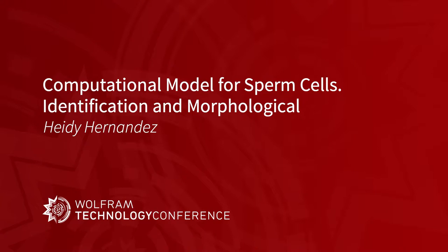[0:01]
But what I'm presenting here today is part of a project I've developed outside of work in my university back in Peru. They are actually building a computerized tool to assess male fertility based on analyzing videos and images from sperm samples. So what I did in the early stages of the project was a brief research and, using Mathematica, develop a model to analyze the morphology of the sperm cell head specifically, as a partial result on the evaluation of the cell. So this is what I'm going to show you today.
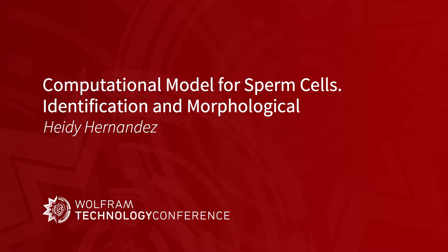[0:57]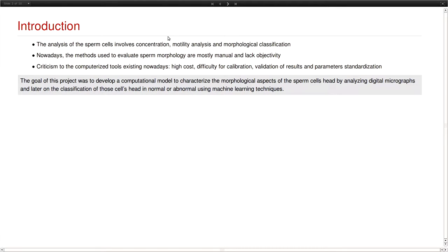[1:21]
First of all, the analysis of the sperm cells involves concentration, motility analysis, and morphological classification. There is also a macroscopic analysis that's made to the samples, but in terms of the microscopic analysis, this is what is usually done. Nowadays, the methods used to evaluate sperm morphology are mostly manual and lack objectivity. And for the computerized tools that do exist, there is criticism about the high cost they have. They are difficult to calibrate. Mostly, they are hard to use in a lot of cases.
So the goal of this project in particular was to develop a computational model to characterize the morphological aspects of the sperm cells, extract features, and classify these cells' heads as normal or abnormal using a machine learning algorithm.
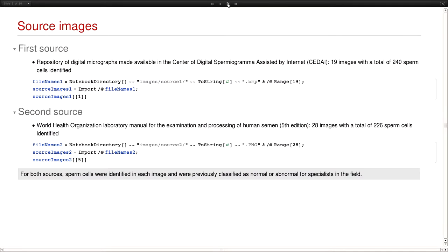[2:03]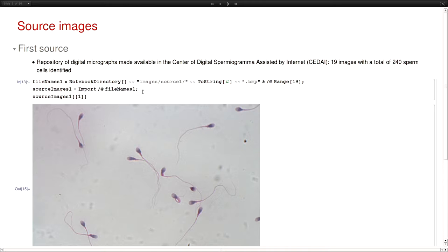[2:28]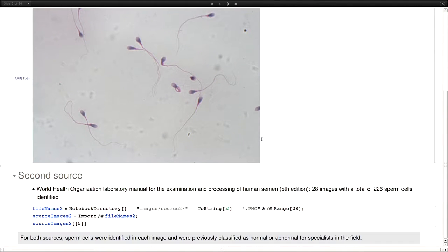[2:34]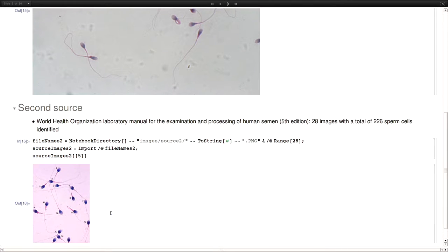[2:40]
I use two sources. The first of those was made available by the Center of Digital Spermiogram assisted by internet, which is an organization from Chile. I am not including the images in the presentation, but I do have some notes at the end in the references, so if you are interested in knowing more about this, you can find the images there. This is an example of the images we get from the first source. And the second source was the World Health Organization laboratory manual. We get these other images.
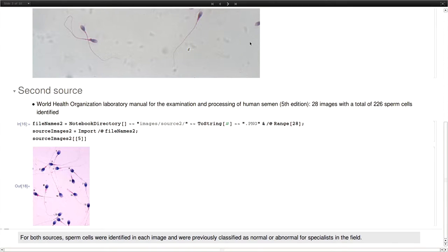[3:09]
We needed to use two sources because the first one didn't contain enough cells. And also, the cells were mostly abnormal, and that doesn't work if you want to build a machine learning model. You need a representation for both of the classes, normal and abnormal cells. That was the reason we had to use a second source. For both sources, we had the images, and we also had a classification made by the specialists on whether the cells were normal or not, so we could train the machine learning algorithm.
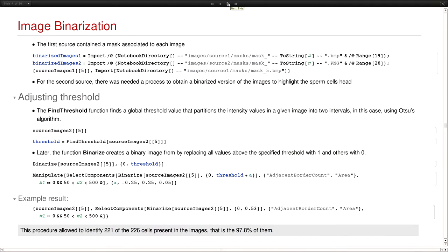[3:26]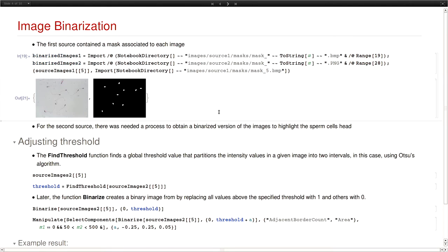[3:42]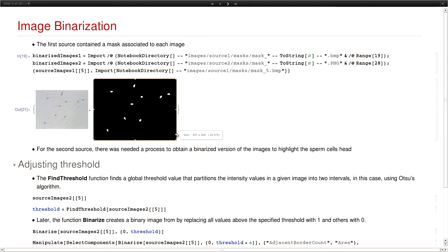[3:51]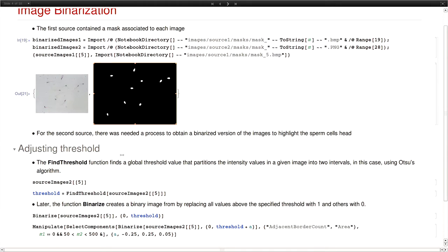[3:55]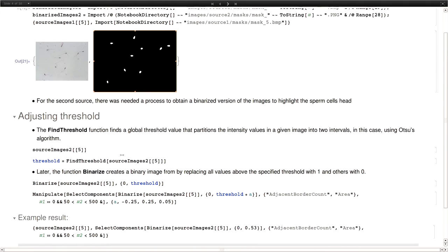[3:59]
We needed binarized images for these original images so we could analyze the components, in this case, the sperm cell's head. In the case of the first group of images, we had those binarized masks for each of the images. So in that case, we were good. But for the second source, we didn't have those. So we had to do one extra processing step to obtain the binarized mask.
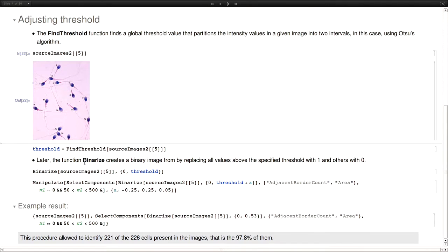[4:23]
Mathematica had tools to do that. The thing is that they don't work directly for all of the cases. You need to do some calibration on the parameters. In this case, for example, this is an example image from the second source. And the Binarize function from Mathematica, which is what we use, transforms the image to grayscale and then applies some algorithm, which by default is the Otsu algorithm, to separate the foreground and the background of the image and return a binary image which only contains black and white pixels.
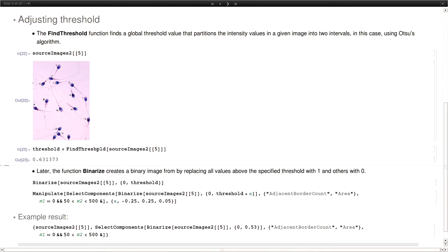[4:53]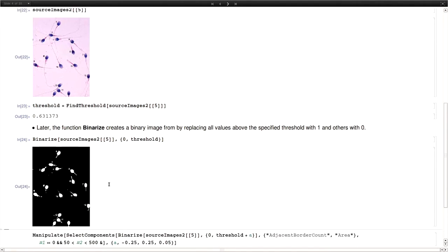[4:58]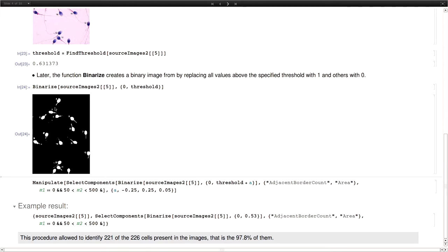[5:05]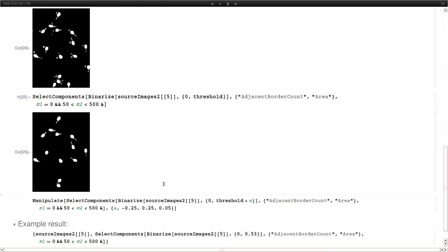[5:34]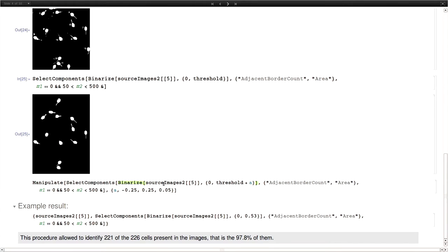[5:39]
Internally, the Binarize function has to find a threshold value, but we found out that the value it finds by default makes the result something like this, which is not what we wanted, because there is a lot of information that is not what we need. So the first thing could be to select the components with the SelectComponents tool, in this case filtering by area. So we just use the components that have a size that we know we are looking for, and we get rid of some white points, but that is not enough again. So what we did was try to find an adequate value for the threshold. We didn't begin from zero. We looked around the threshold value that Mathematica returns, in the neighborhood of that value.
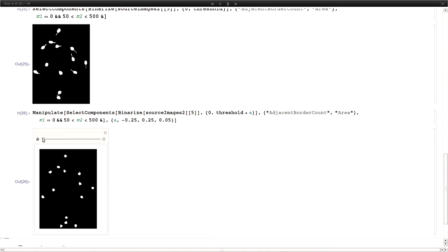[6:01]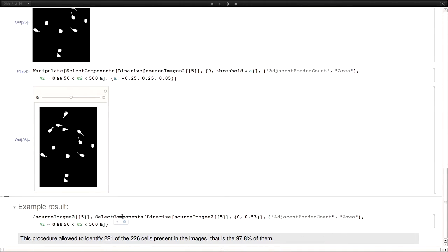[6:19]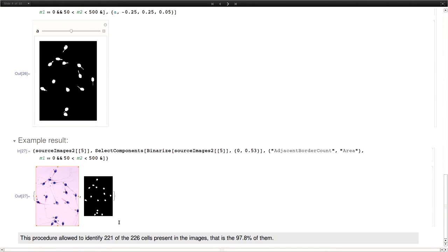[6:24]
So here is an example of what happens if we use a small value of the threshold. We lose information on the cell's head, and if we use a larger value, then we are including information that is not wanted. So the key here was to find an adequate threshold value. This is an example of one of the results obtained. The images are not big. With this procedure, we were able to identify almost 98% of the cells in the second source, which for the purposes of the research was a good result.
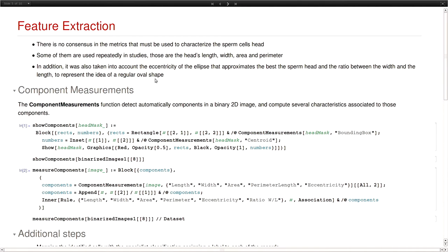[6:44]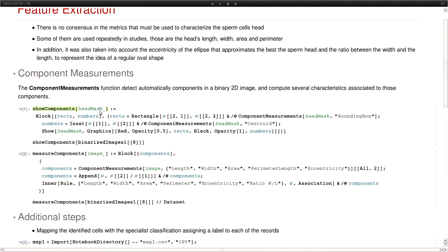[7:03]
The next step is to extract the features. Mathematica has the ComponentMeasurements function, which works with binary images and measures features from the components in the image. In this case, for the binary image we have, I'm just showing what Mathematica does. I mean, it doesn't do that directly. I just drew the bounding box to see that it's actually identifying the head cells in a really good way, which is what we want.
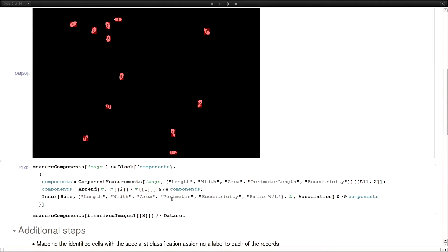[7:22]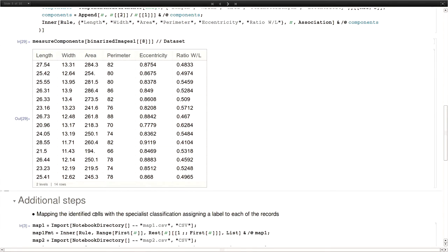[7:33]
And then once we are sure that we are actually identifying what we want, we can measure those components, and I'm showing it in the data set. In this case, we are using length, width, area, perimeter, eccentricity, and ratio. Something that I didn't mention before is that there is no consensus about what features must be used to characterize the sperm cell head. So what we did is we used some of the ones that are most mentioned and that have obtained good results, and we also added the eccentricity and the ratio just to give the idea that the sperm cell head must have a round, regular, oval shape.
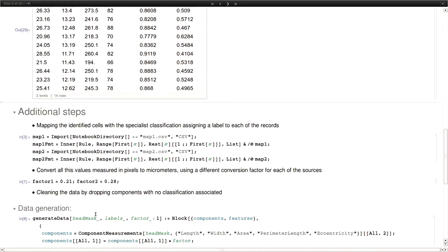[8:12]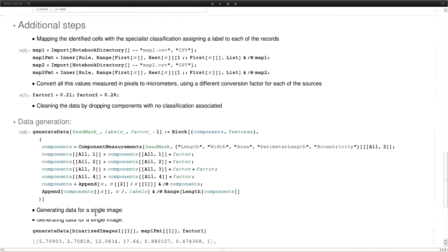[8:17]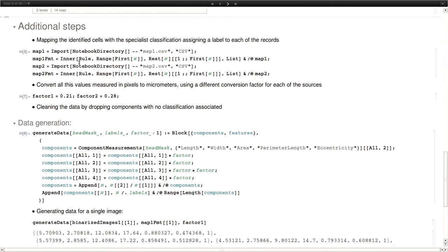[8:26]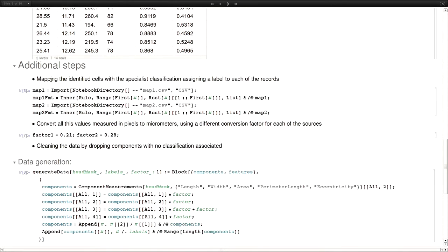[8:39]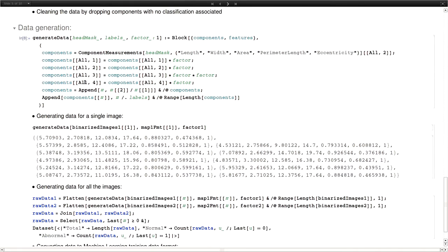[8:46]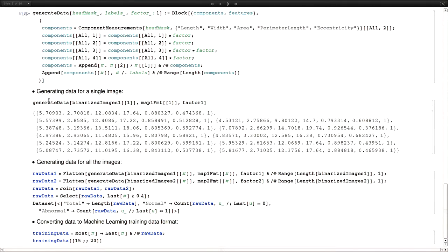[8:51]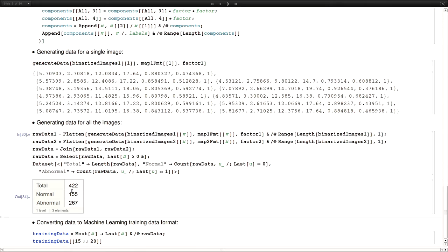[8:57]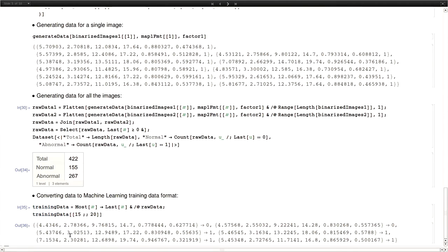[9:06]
There are some additional steps here. First of all, we need to add a label to each of the entities, in this case the sperm cell head. We needed to add the classification given by the specialists, whether the cell was normal or not, so we could train the classifier. We also needed to convert the pixel measurements to micrometers, and for that purpose we use a factor for each of the sources, given in the documentation of the sources. By doing that, we could generate the data for all the images and all the cells, and at the end we get a total of 422 cells, 155 normal and 267 abnormal. So we converted that to the machine learning format for Mathematica, which is the features pointing to the value of the class. In this case, 0 for normal cells, 1 for abnormal cells.
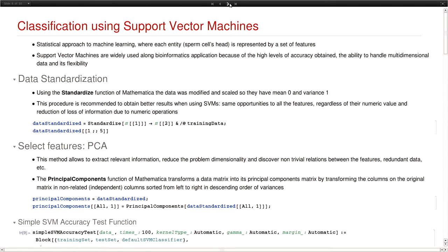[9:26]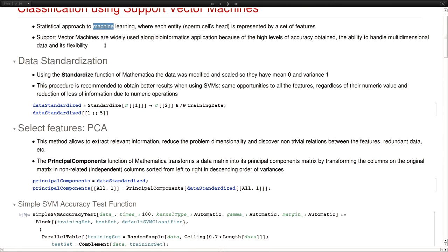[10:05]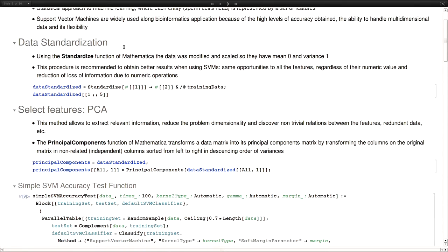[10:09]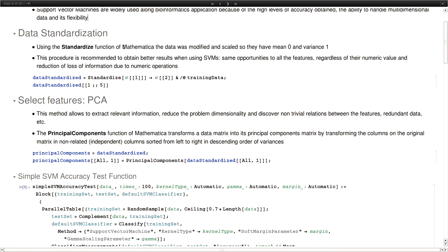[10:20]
Now going to the classification step. Here we use support vector machines. For those who are not familiar with the algorithm, I'm not going to go deep on that. Just to mention that it is a statistical approach to machine learning, because what we do here is that we have a set of features to characterize the entities, in this case the sperm cell head, and then we have an algorithm that builds a machine learning model based on those features. Support vector machines are widely used in bioinformatic applications because they have high levels of accuracy in applications similar to the one we were handling in this project. They also have a good ability to handle multidimensional data and so on.
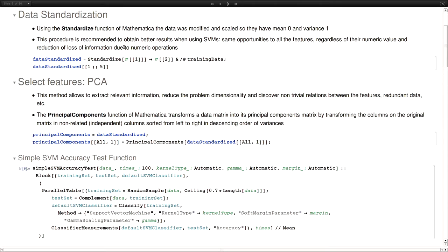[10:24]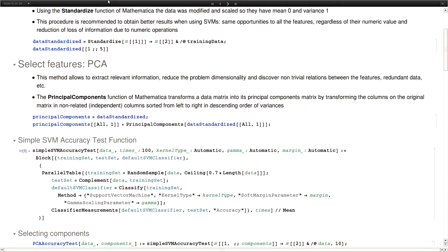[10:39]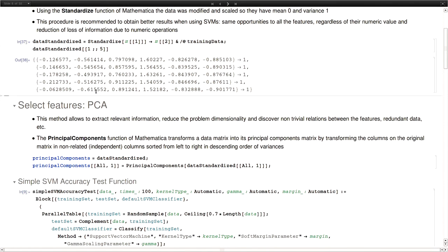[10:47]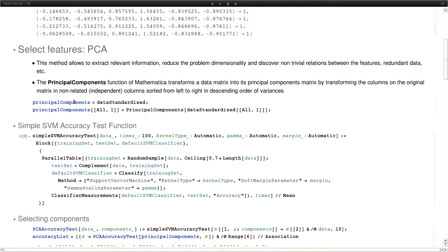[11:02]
We did a previous step before training the classifier, which was the standardization of data using the Standardize function from Mathematica. So we give the same opportunities to all the features, regardless of the numeric value. That also reduces the loss of information due to numeric operations. So we standardized the features, and then we did principal component analysis. Why did we do this? Mostly it's used to reduce the dimensionality of problems. In this case, that wasn't a goal at the beginning because we just have six features, so there was really no need to reduce the dimensionality as a computational problem. But the thing is that this also helps put the data in a feature space that is more adequate, in the sense that it shows better the relations between the features and the class, and we could eliminate redundant data. Maybe some features are a combination of other features. So with principal components, we removed that.
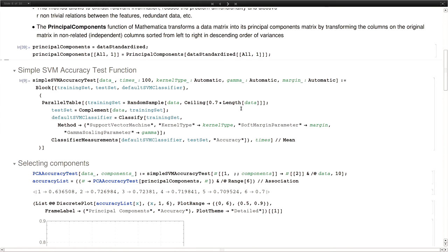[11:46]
Then there was another question, which was how many components to use.
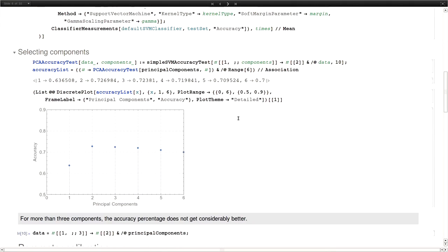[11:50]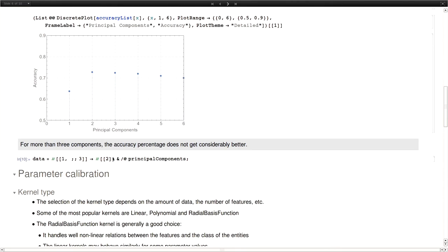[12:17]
I'm not going to go into much detail on this, but basically what we did was perform several tests using support vector machines with the default parameters, first with one component, then two components, then three components. We see that with two components we gain a lot of accuracy in the results, but more than that is just not doing things any better. So maybe three components was a good enough decision to make.
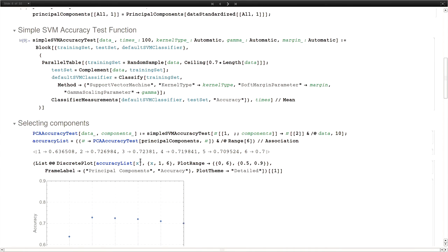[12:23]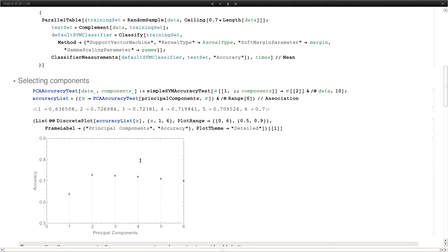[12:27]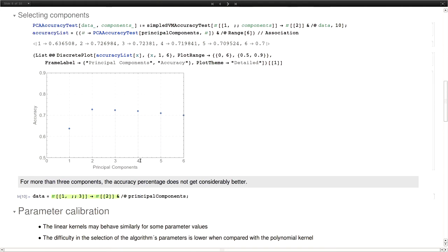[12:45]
In the principal component function of Mathematica, what it does is transform an input matrix into its principal component matrix, which has the same dimension but independent columns that are ordered from left to right in order of variance. So if we want the first three principal components, we just grab the first three columns of the matrix, which is what we did here.
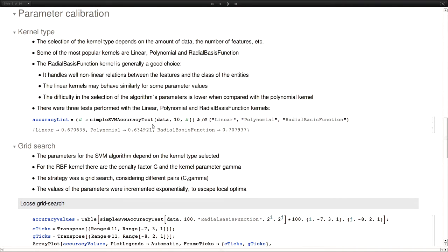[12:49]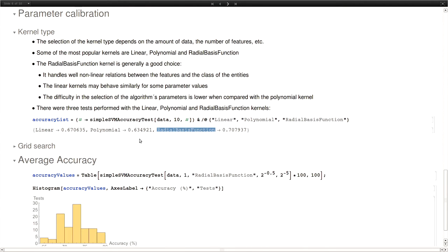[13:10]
For the algorithm, we first have to choose the kernel type. The most popular kernels for SVMs are linear, polynomial, and radial basis function. We did some tests over the training data with default parameters for SVMs, and we found that the radial basis function was giving the best results. Using radial basis function is also generally a good choice, because it handles nonlinear relations between data well. It may behave similarly to the linear kernel for some parameters, so it's generally a good choice.
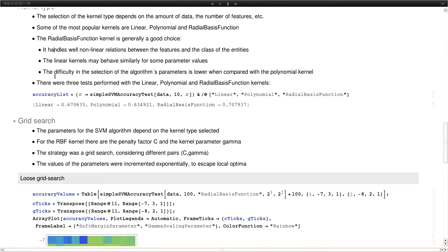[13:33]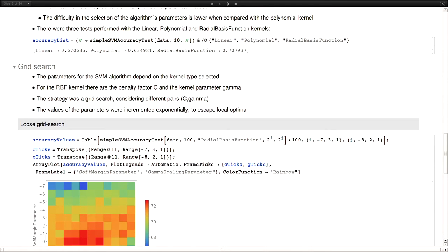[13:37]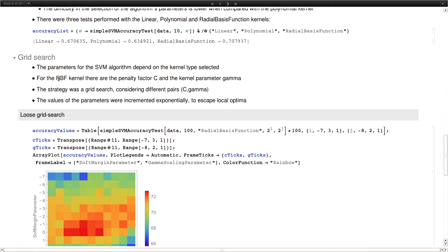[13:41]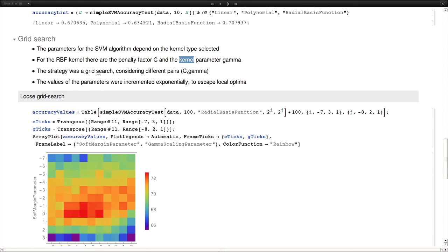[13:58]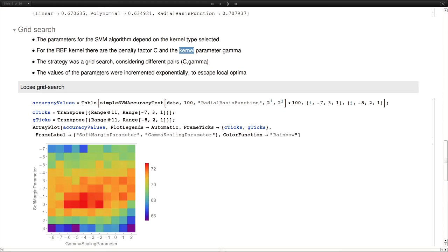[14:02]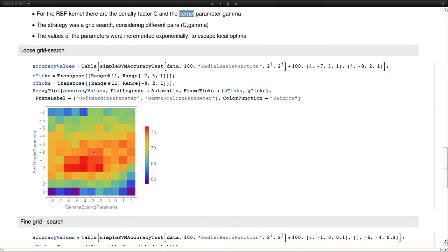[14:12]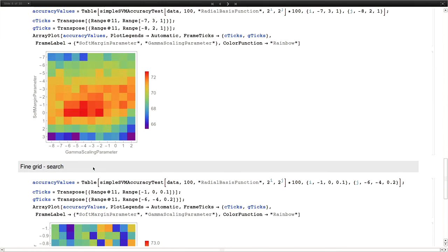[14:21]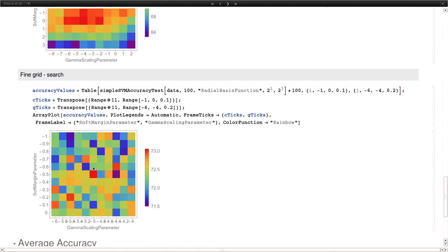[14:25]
Now, for each kernel type, there are several parameter values to be selected for SVMs. In the case of the radial basis function kernel, which is what we use, we have to calibrate the penalty factor C and the kernel parameter gamma. The strategy used here was a grid search, considering different pairs of C and gamma, and then evaluating the results. We did two steps. The first is a loose grid search in which we use wider intervals, and then we plot the results to see what areas were the ones where better results were obtained. Then in the second step, the fine grid search, we went closer to those intervals, and then we chose some values for the parameters.
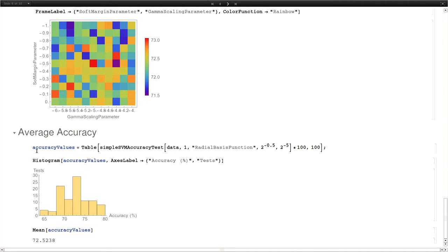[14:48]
I have to say here that these values are not magical numbers or anything. They depend on the data we have for training. So if you have a different image data set, you have to run this test again to find the numbers that best fit the specific problem. We ran several tests over the data, separating it randomly into training and test data, and we obtained a mean accuracy of almost 73%.
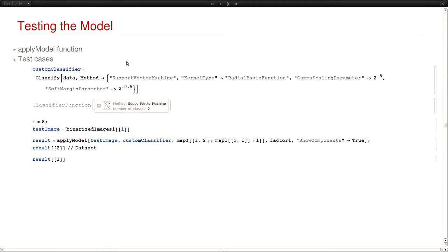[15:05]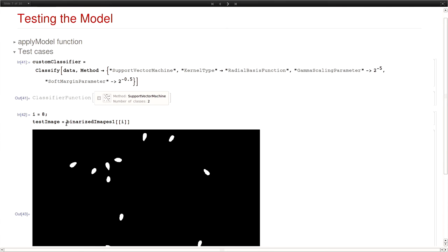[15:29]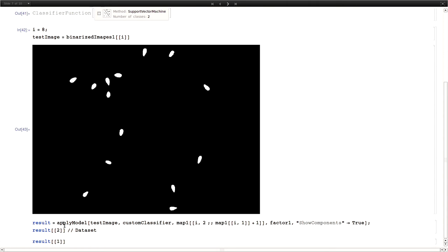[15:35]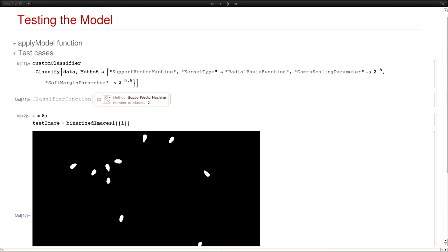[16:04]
So to put all the things together, here is a final example. Once we have done all the steps and we have a trained classifier, a classifier function for which we know the parameters that give the best results, we can take an image, a binary image in this case, and apply the model. Behind the scenes, this image is going to be measured by component measurements. These measures are converted from pixels to micrometers, the data is standardized, principal component analysis is applied and the three most important components selected. And finally, using the classifier function that we generated up here, we classify these cells.
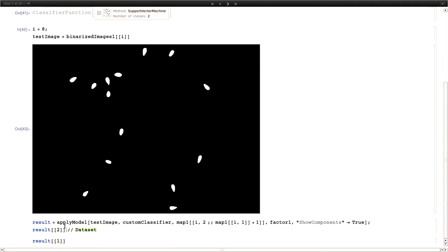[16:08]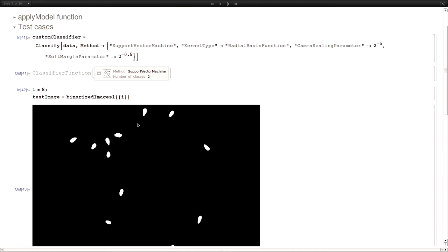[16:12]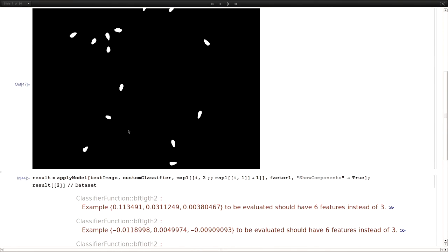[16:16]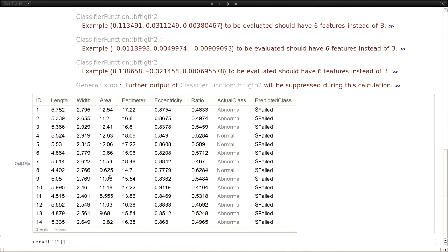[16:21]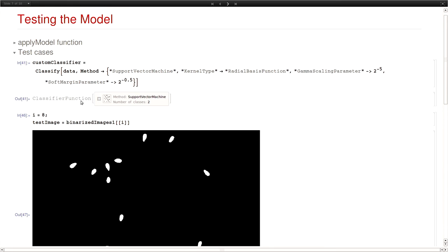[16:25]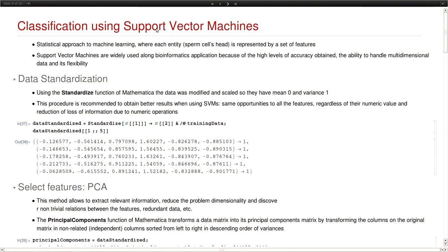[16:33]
And what we are obtaining here is we have it here. I'm sorry. I must forgot to evaluate something here. Just 1 minute.
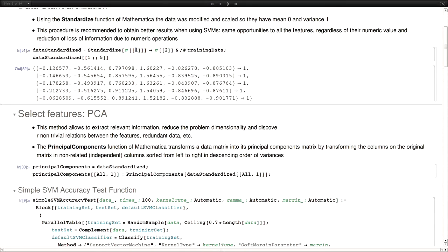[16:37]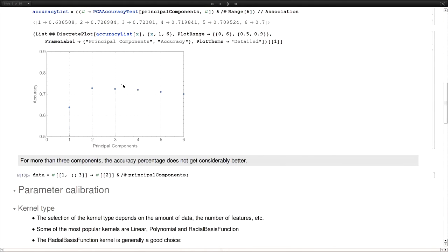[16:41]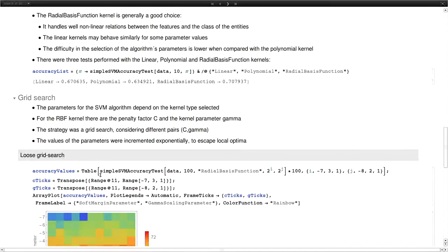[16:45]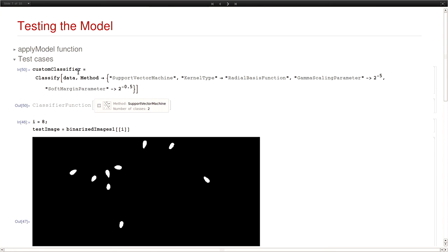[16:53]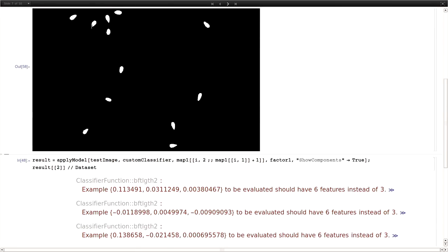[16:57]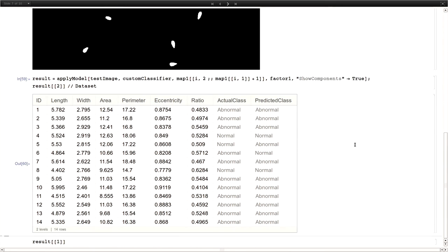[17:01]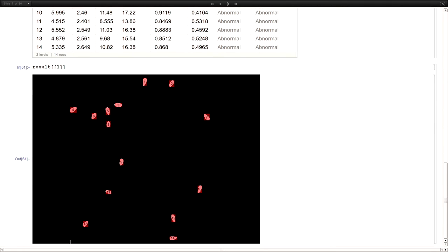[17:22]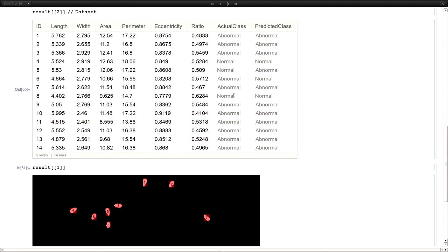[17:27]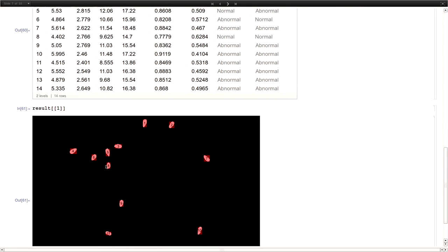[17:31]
Okay, here we have it. What we get is a data set. This is just to show the result of the model we were developing. We have all the features we extracted from the images, the actual class and the predicted class. We can see the relation of that with the actual image by enumerating the cells. So we can see that, for example, number 8 is normal and was correctly predicted as normal, that's the cell over here, and so on.
One final thought I want to say here is that I was able to use Mathematica through the whole process, from the basic image processing we did to the classification part, going through other steps that were complementary to this work, like standardizing the data, doing principal component analysis, and so on, by writing a minimal amount of code and having everything in the same place.